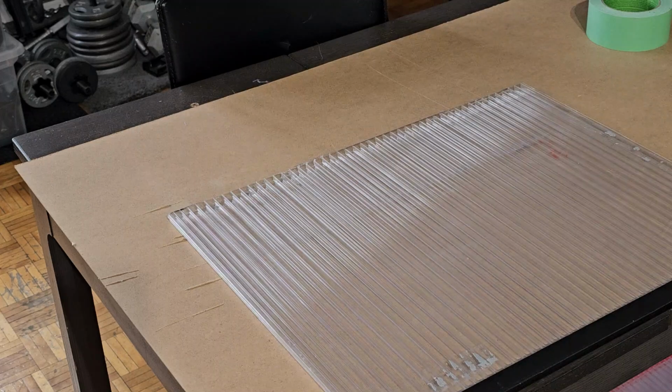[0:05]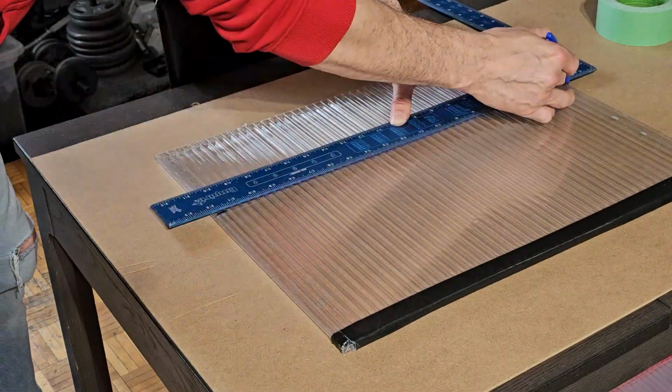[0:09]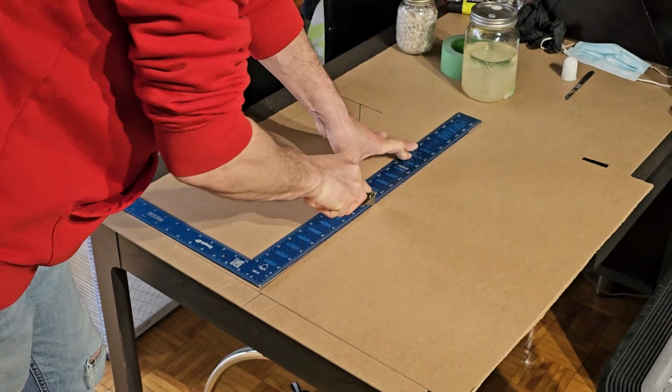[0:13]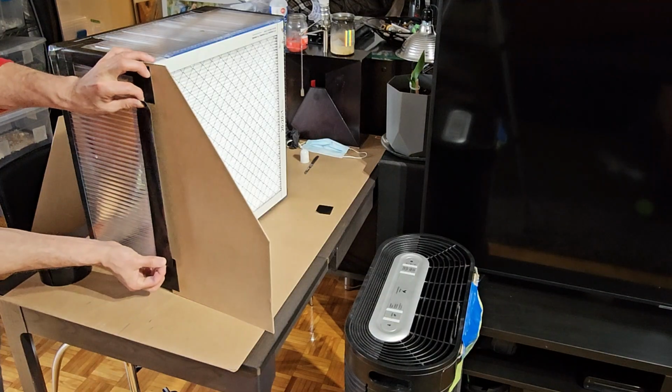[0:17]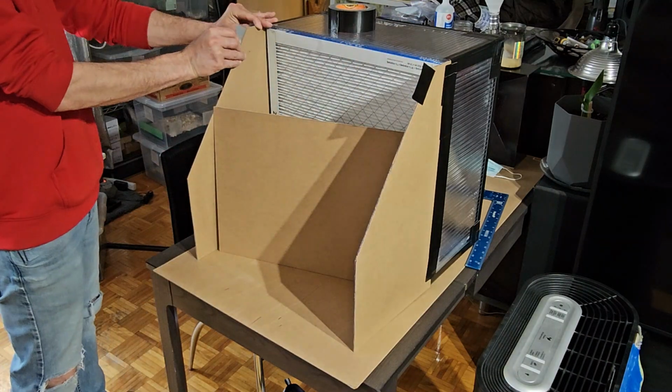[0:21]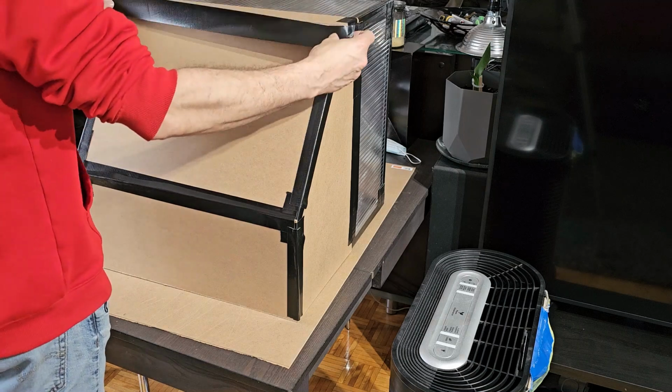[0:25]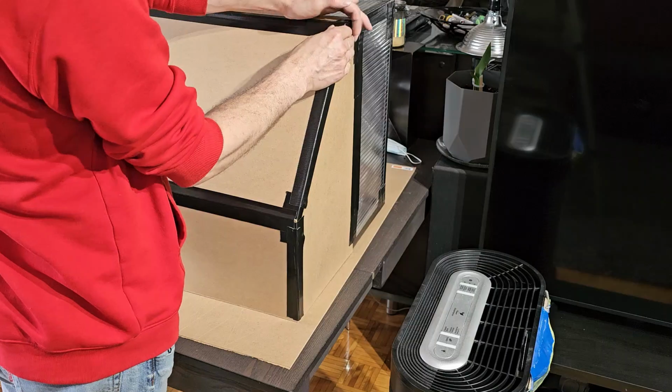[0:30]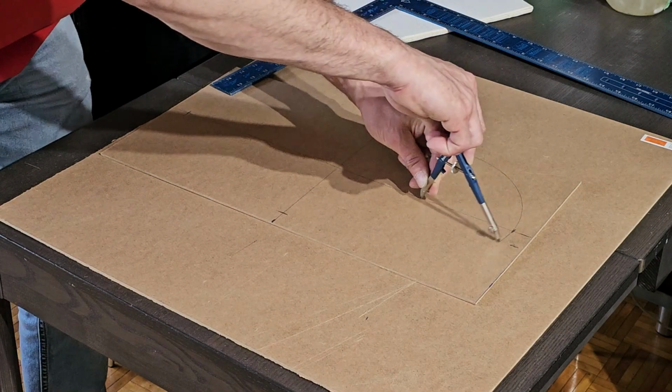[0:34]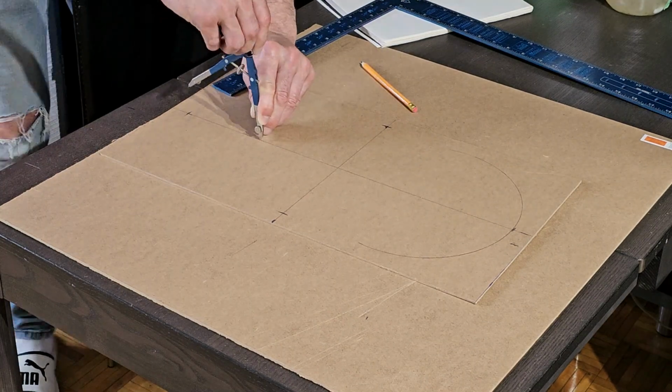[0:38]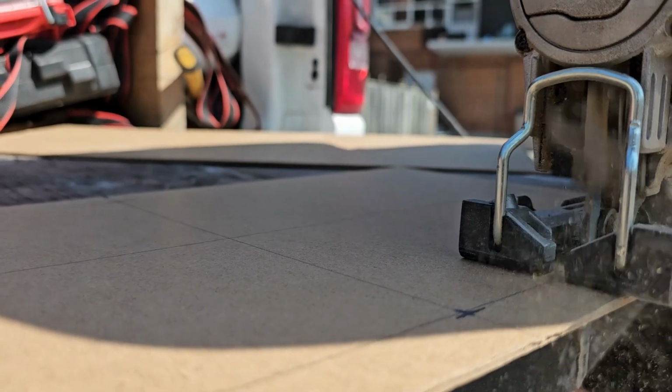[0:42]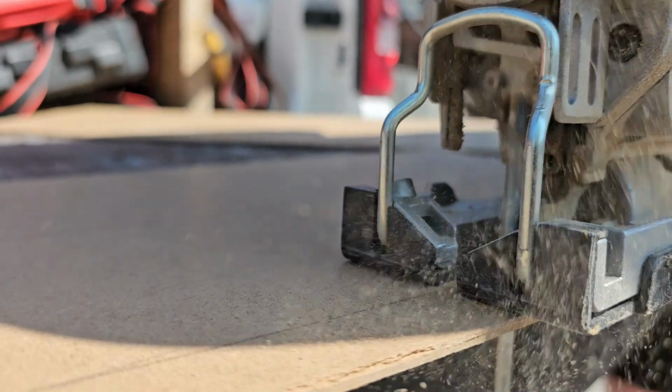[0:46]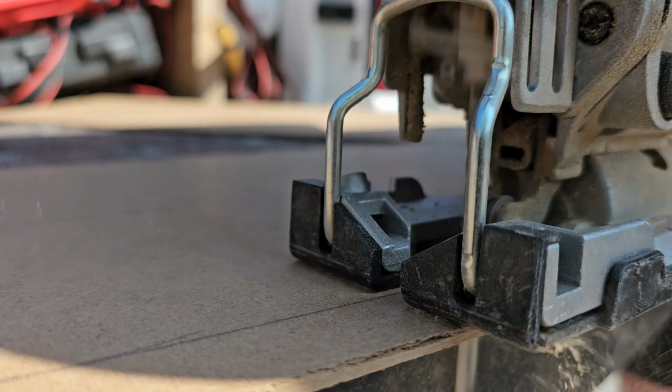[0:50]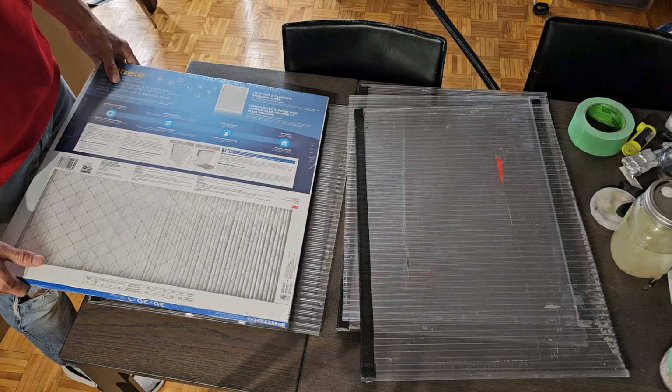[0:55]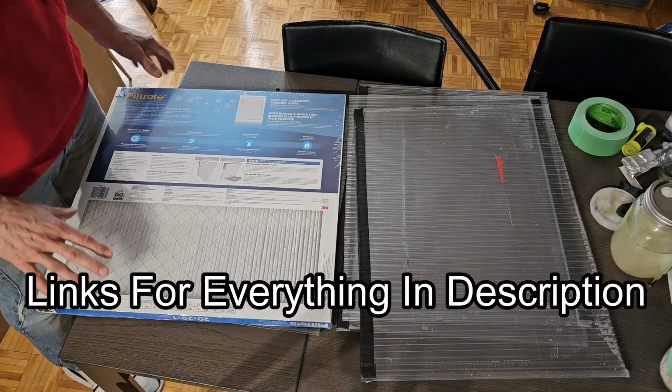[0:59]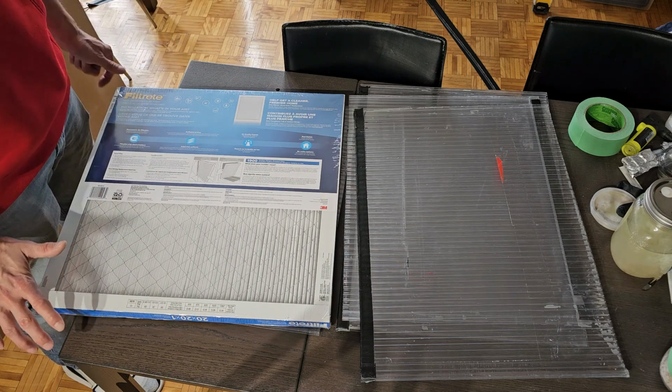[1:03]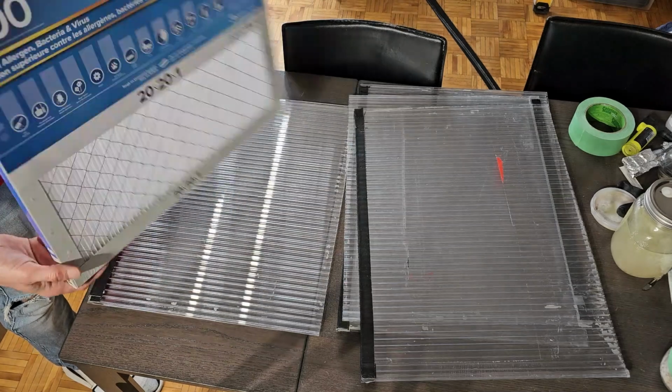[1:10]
Some of you may have seen my first video. I decided to take it all apart and build it again, actually showing you guys how I do it step by step. I'm also going to refine the design in the process, because originally I had just used the cardboard box that it came with. So I bought a new filter.
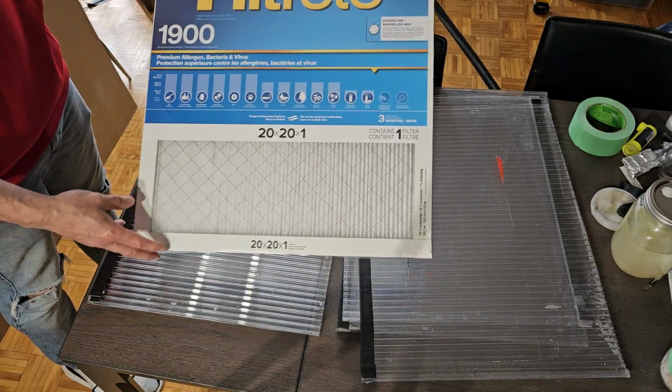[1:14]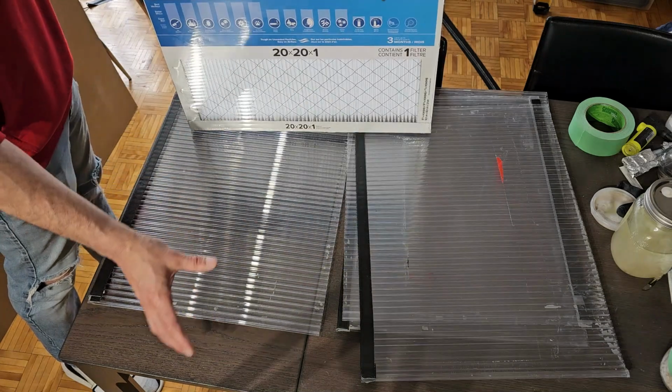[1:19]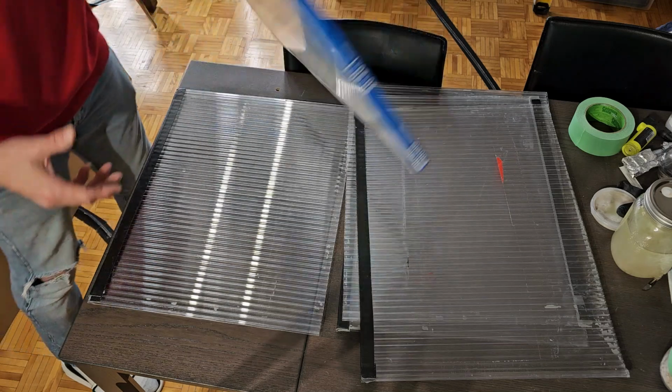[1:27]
It's a 20 by 20 by 1 inch. And this is my secondary filter. It's what's going to help me to build up pressure from my air purifier behind here to help it flow through more evenly, because the air purifier is not going to do that alone.
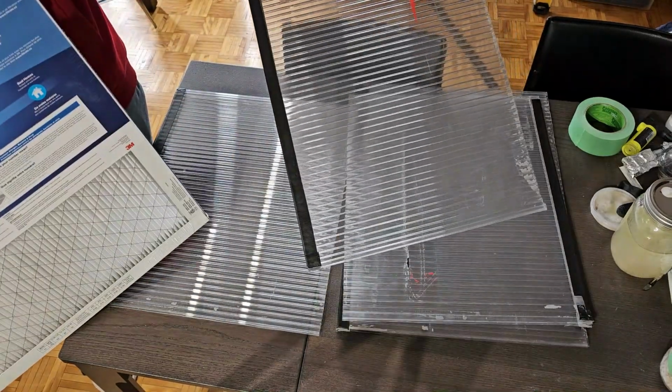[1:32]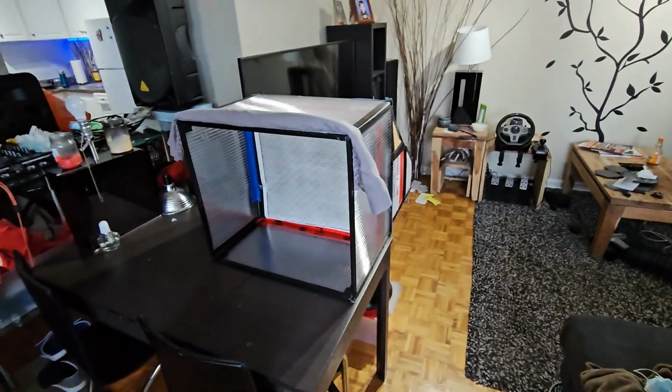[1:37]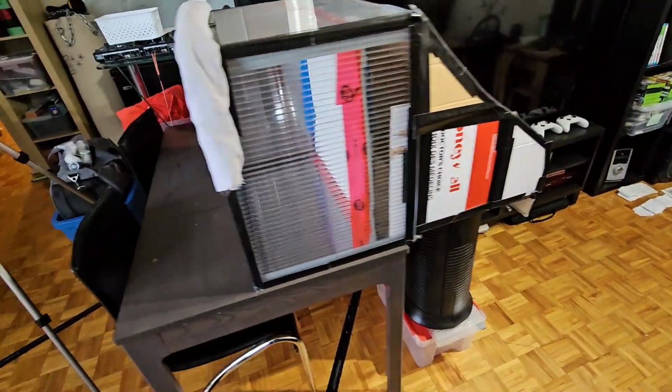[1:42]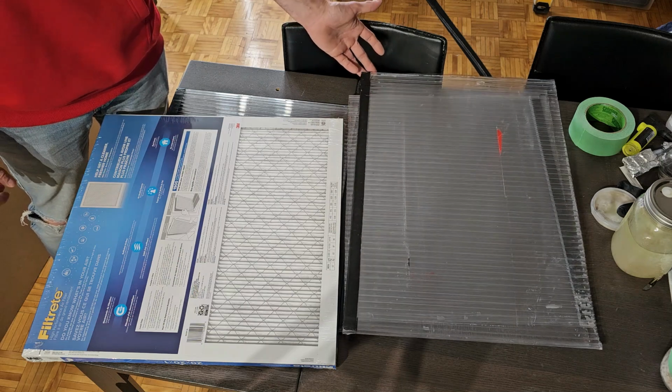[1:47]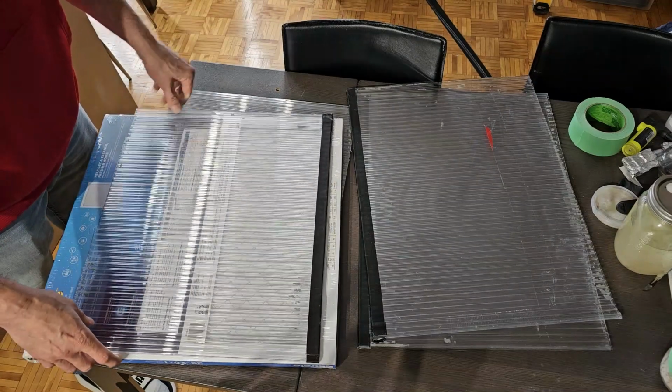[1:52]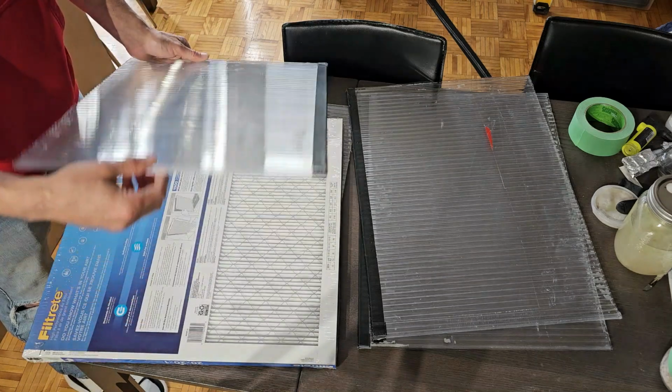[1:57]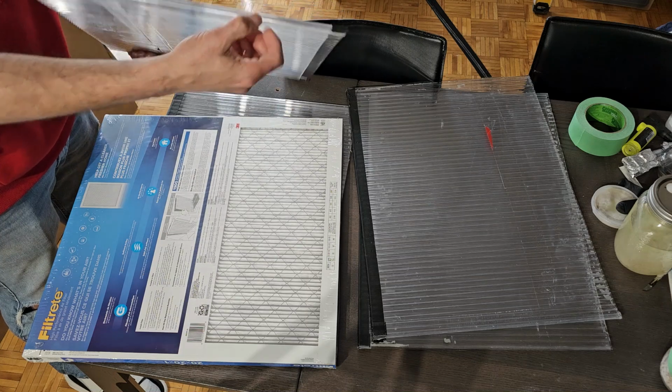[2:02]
Anyways, I've reused the corrugated plastic from the last box. So this made up the square in the front that I actually did my work in front of and inside of. Originally, I had not done it at the exact right size, so I'm going to modify that. So basically, to use this to build a box around it, I would need two pieces that are the same size, and then the other two pieces need to be a half inch longer, because this is a quarter of an inch thick. So both sides is a half an inch.
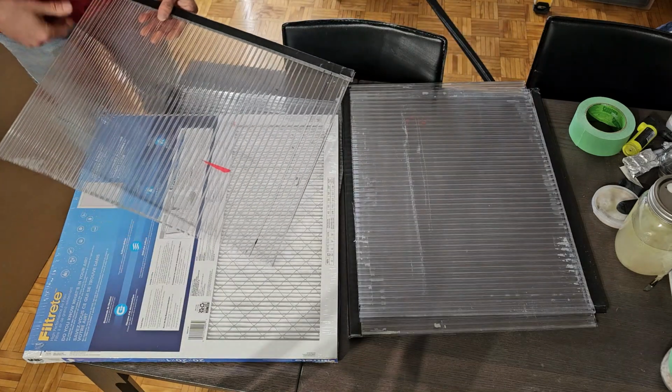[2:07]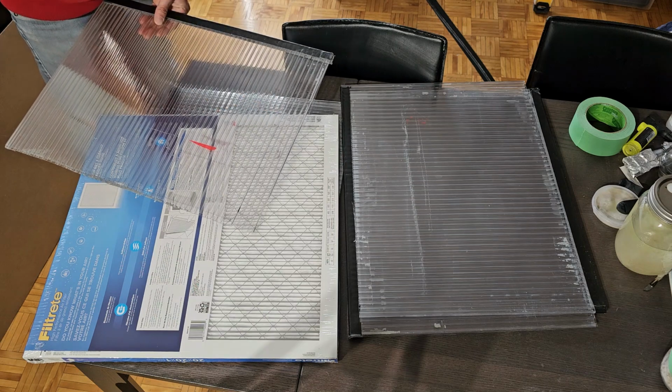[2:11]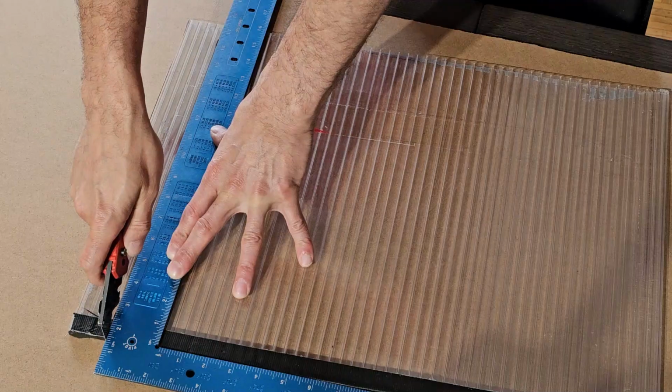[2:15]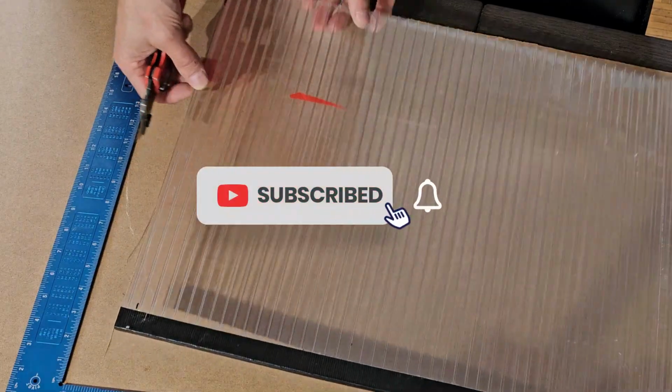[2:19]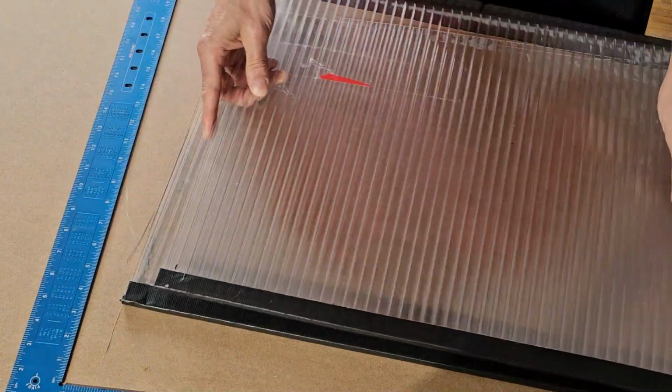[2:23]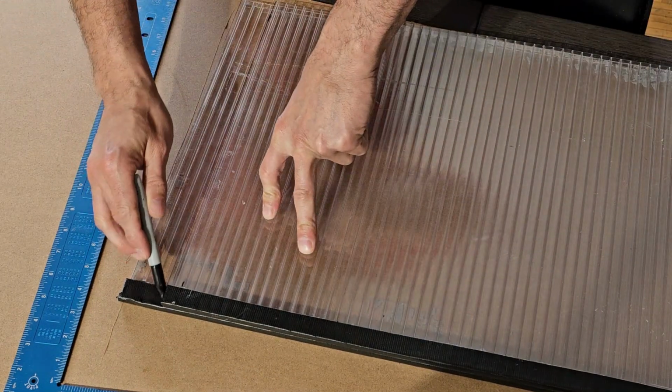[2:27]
So I've marked out on this one already where I'm going to do my cut. So I'm going to do this here and on the other long one. I will say the cut edges of this plastic are very sharp. Now I'm just going to use this one to mark out on the next one where I'm going to cut.
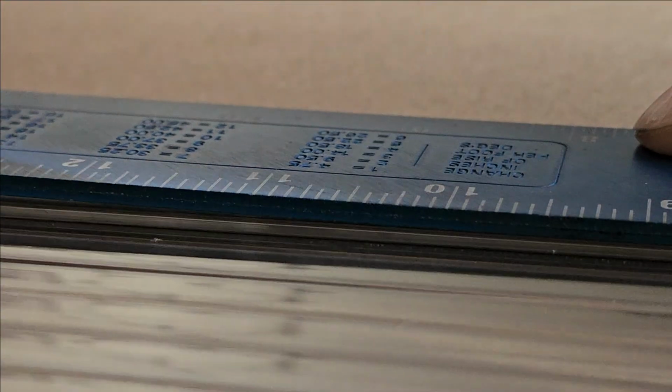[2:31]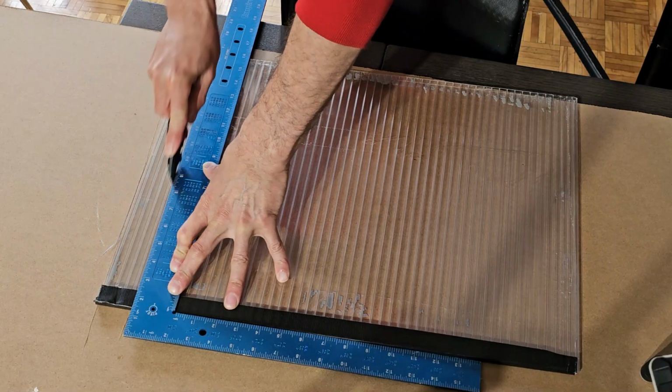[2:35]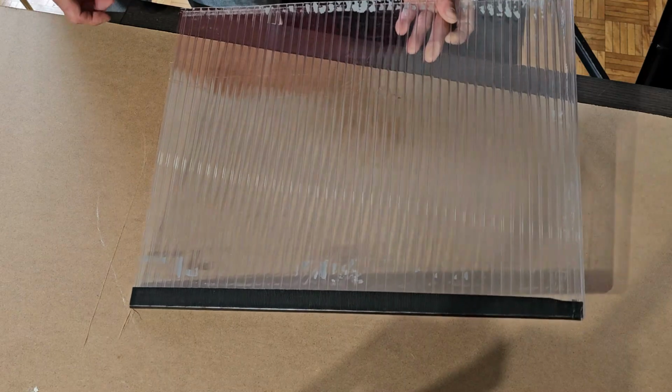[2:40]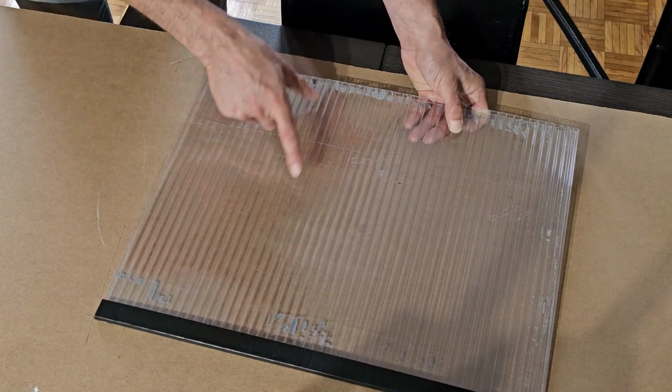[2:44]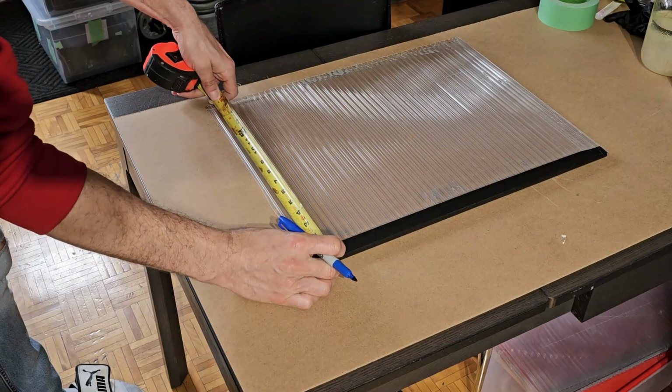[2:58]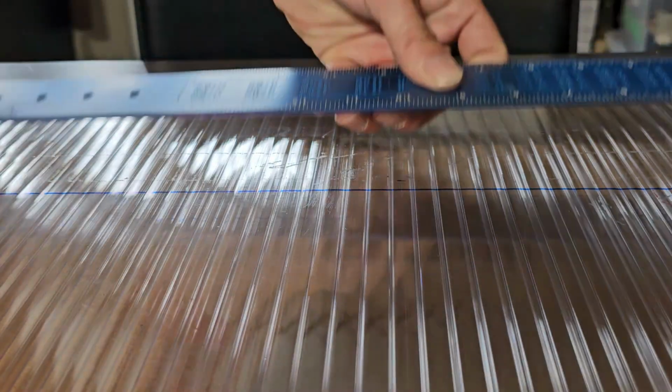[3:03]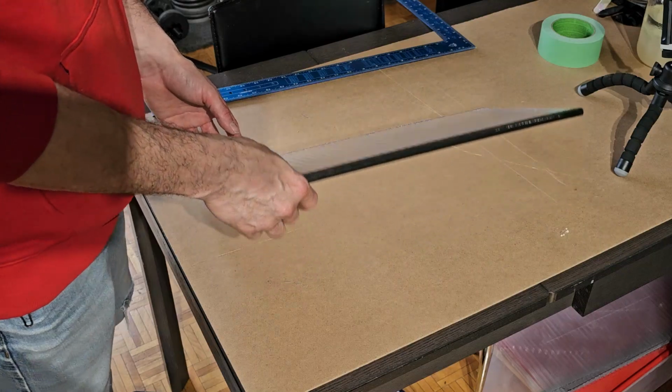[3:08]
Okay, so our next step is to reduce the depth. My last hood fan, I had this much depth in the box in front of it, as well as being able to work in front of this. And it took up too much room. The reality is I only need about half as much. So I'm going to take all four of these and cut them all down. I'm just going to mark 10. Now we're just going to do that three more times for the other sides.
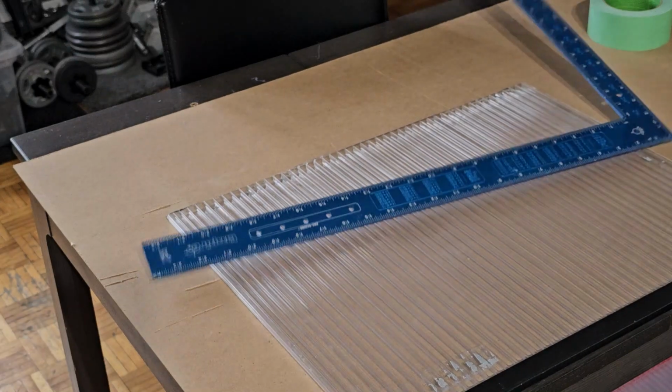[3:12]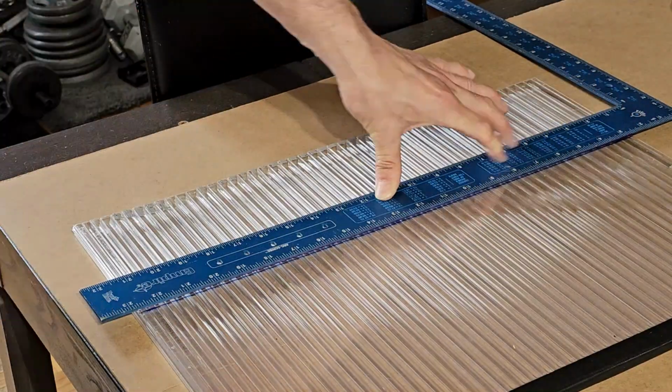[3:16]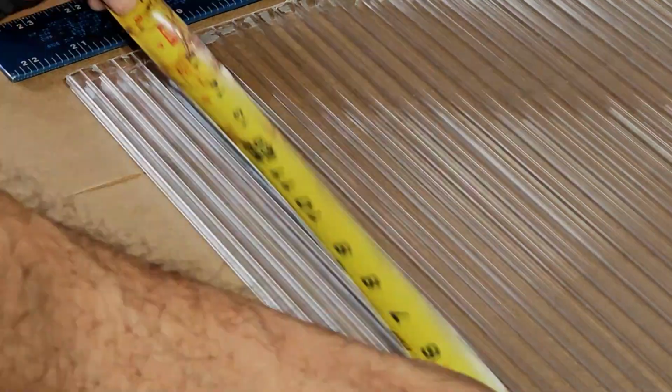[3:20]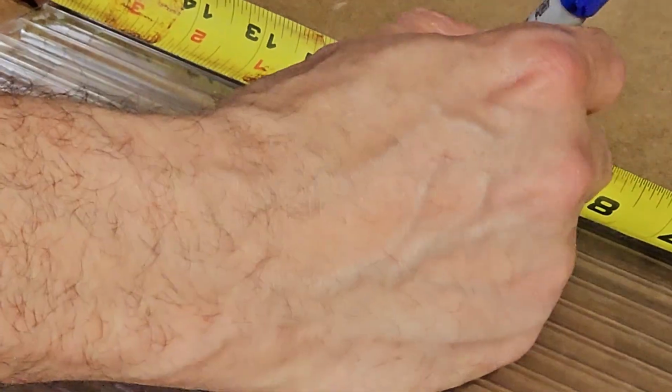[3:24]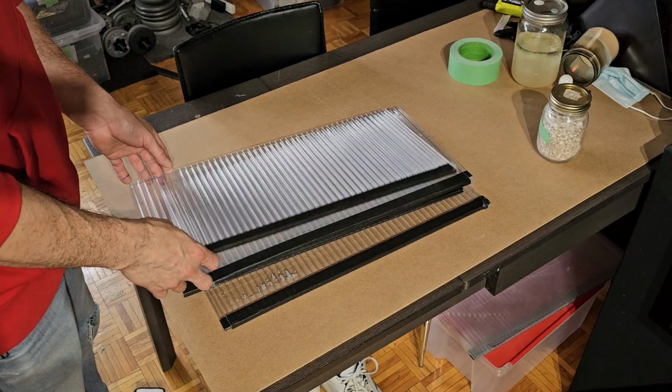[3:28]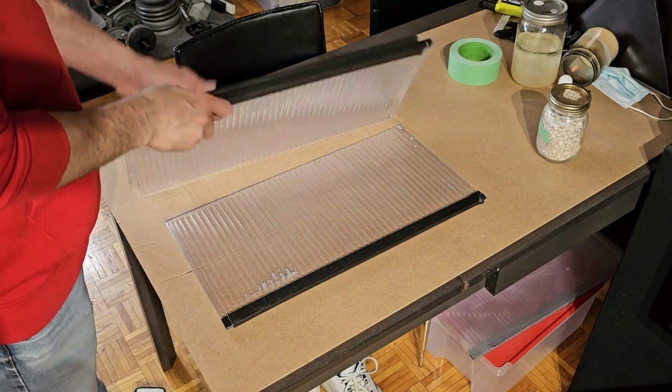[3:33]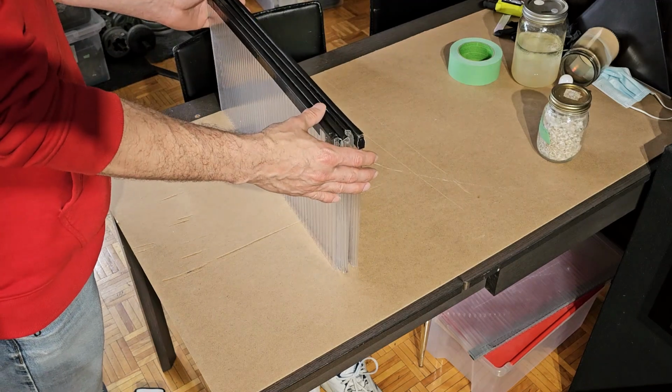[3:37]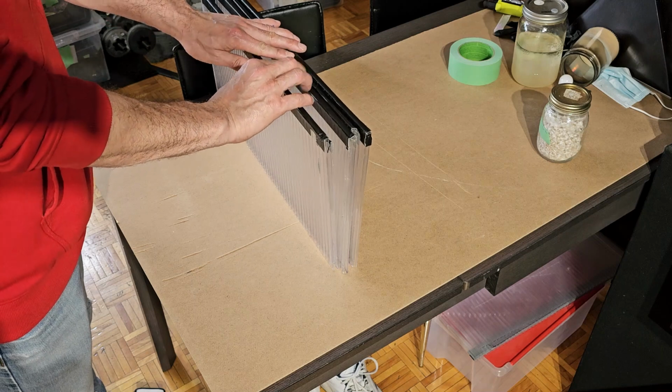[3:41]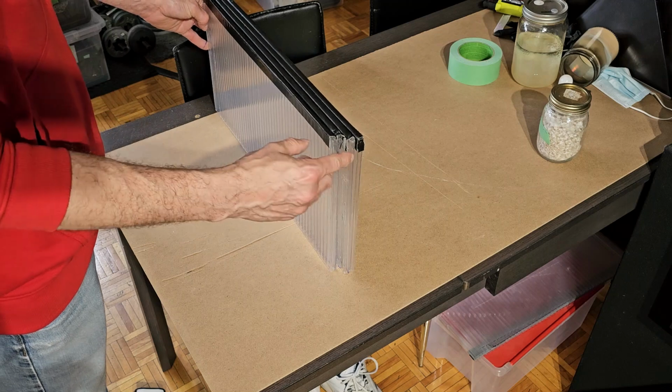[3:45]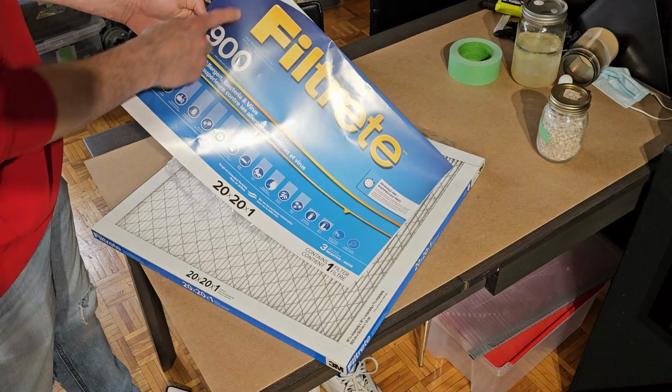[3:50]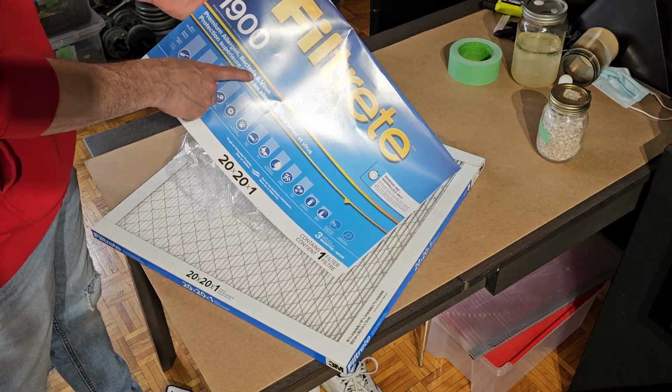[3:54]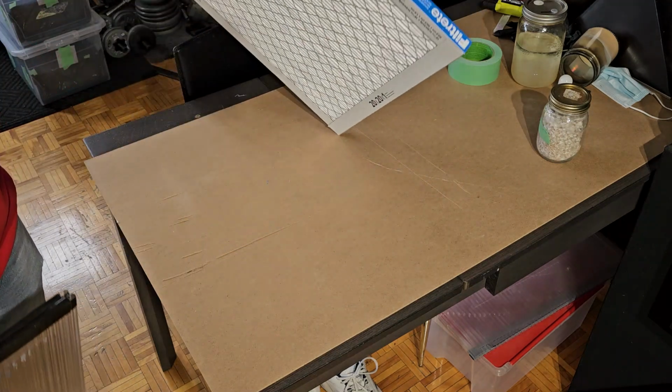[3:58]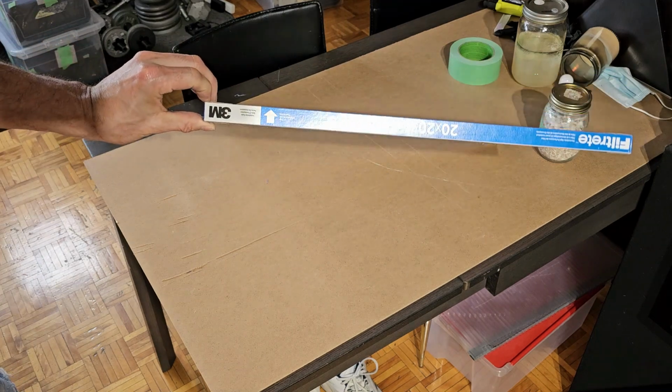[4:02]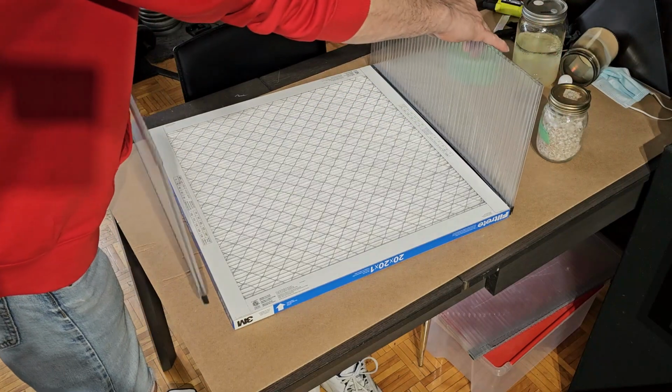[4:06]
These filters are directional, so you want to look on it for the arrows. And as you can see here, it's showing the direction. So the two shorts are going to go on opposite sides.
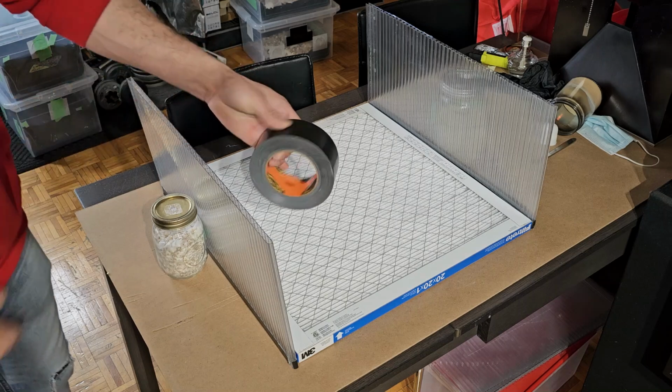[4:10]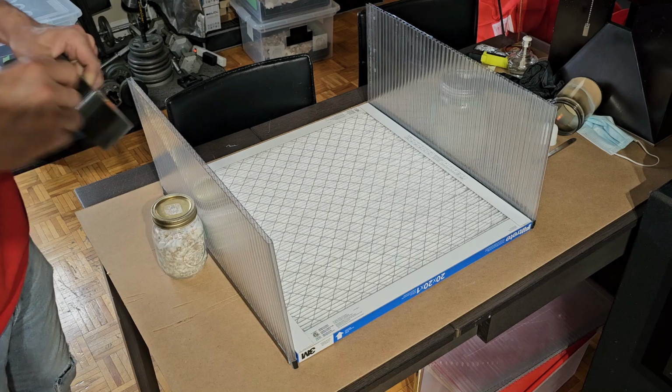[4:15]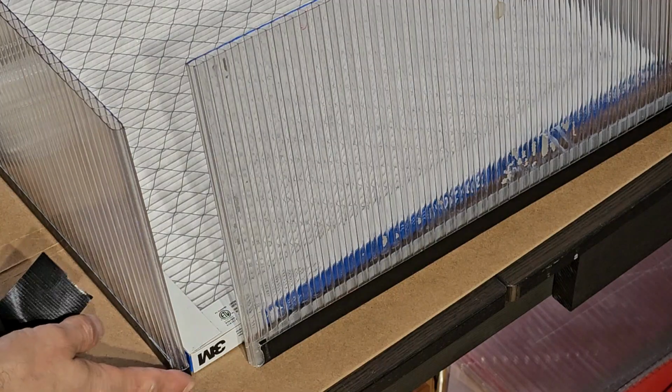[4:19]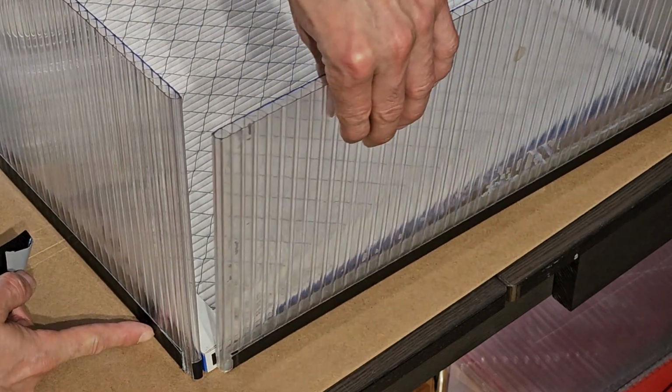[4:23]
All right, so I'm just using some black Gorilla tape. I'm just going to get a couple pieces ready. This is obviously going to be easiest if you have somebody to help you. All right, so this is my short one. It's as long as the filter, which means I want to have this one overlapping this one, like that.
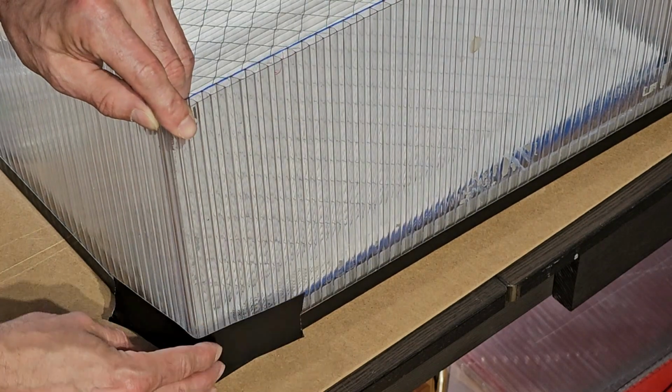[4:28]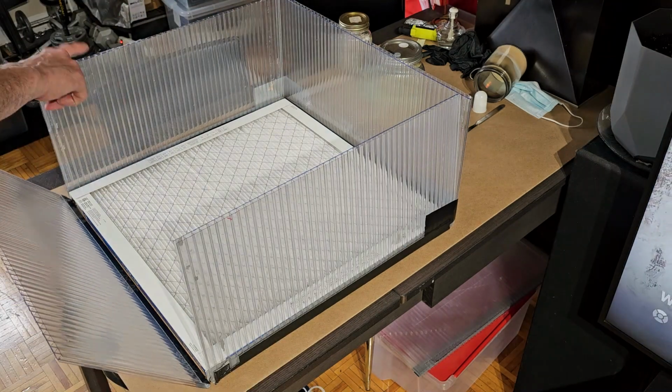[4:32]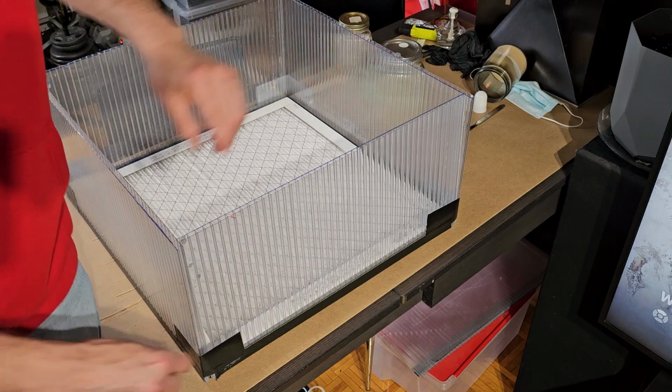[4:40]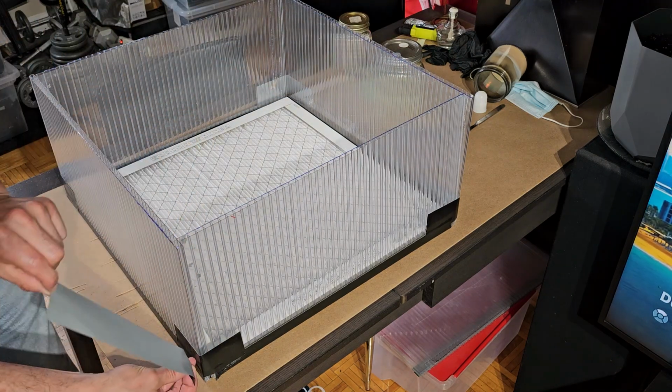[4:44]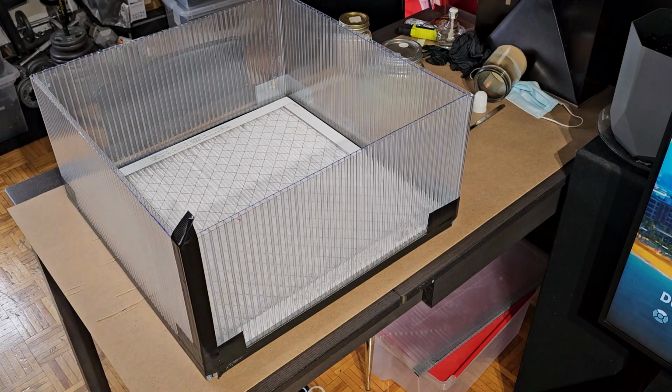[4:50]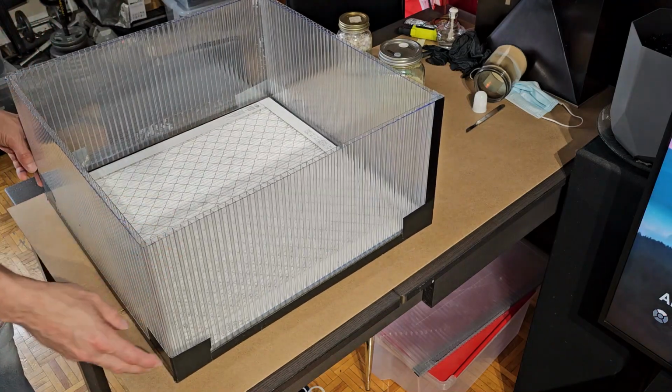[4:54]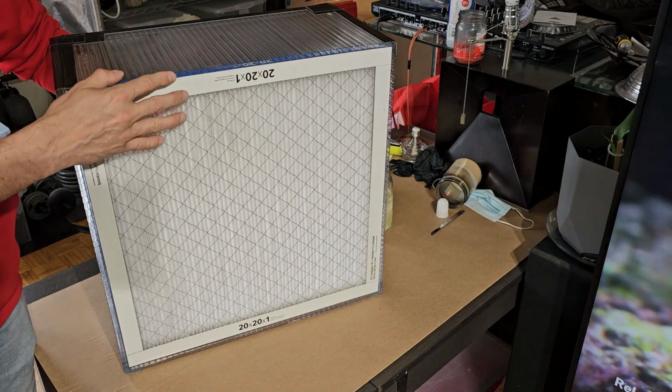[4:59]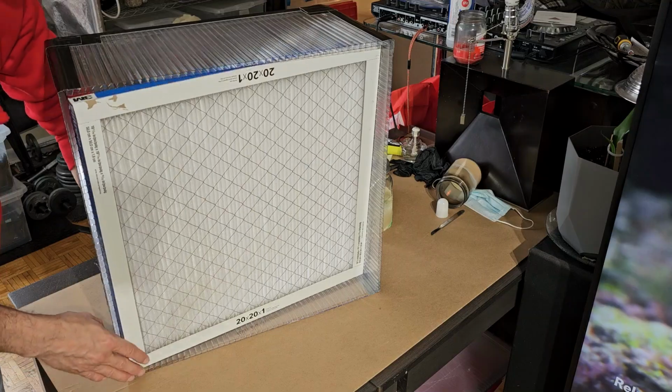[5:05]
And now that it's all held up, it'll be much easier to use some longer pieces. And I'm just going to seam the whole corner, put half the tape on one piece. And I'm just going to do that to all four corners. Now, as you can see, we've got the filter. It can just be taken in and out if you need to change it.
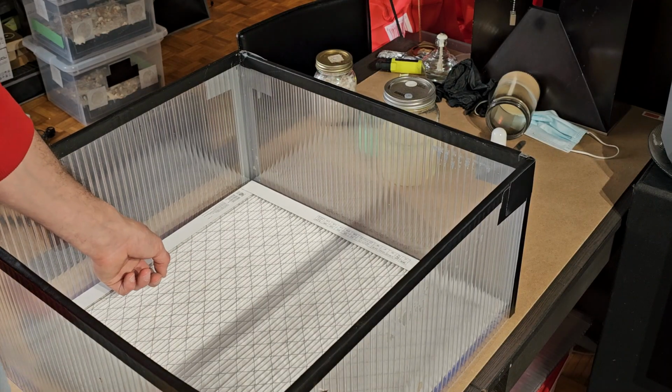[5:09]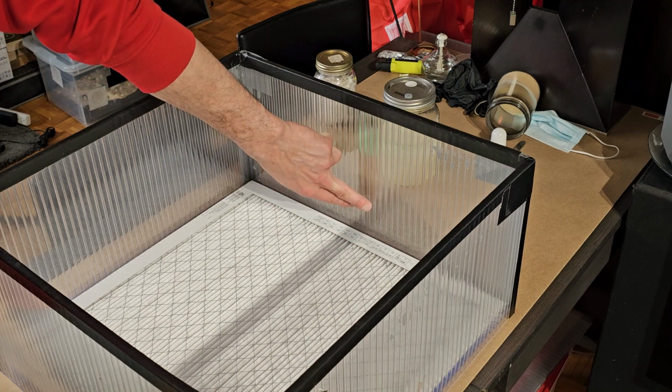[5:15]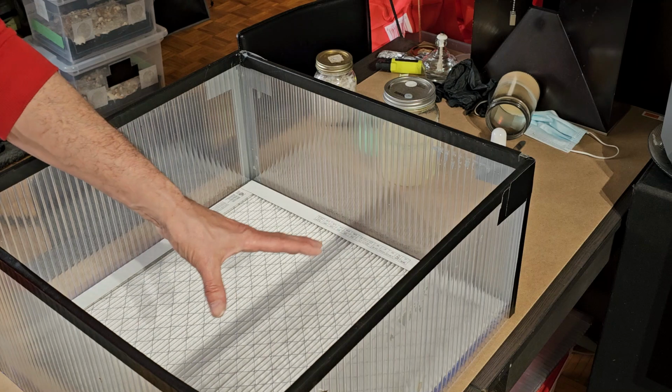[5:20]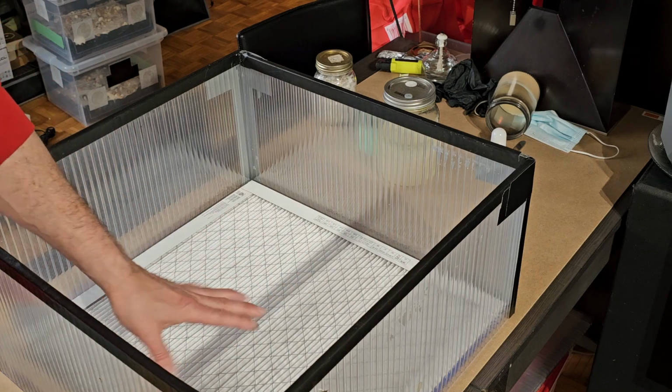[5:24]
Now, if there is a gap here on the side, obviously, as you can see, I will go around and tape all the way around all four sides of the filter to the plastic corrugation, and that way it's sealed up all the way around, and the only way something's getting through is directly through the filter. And then if I need to change the filter, I just cut the tape, change the filter, and add some new tape again.
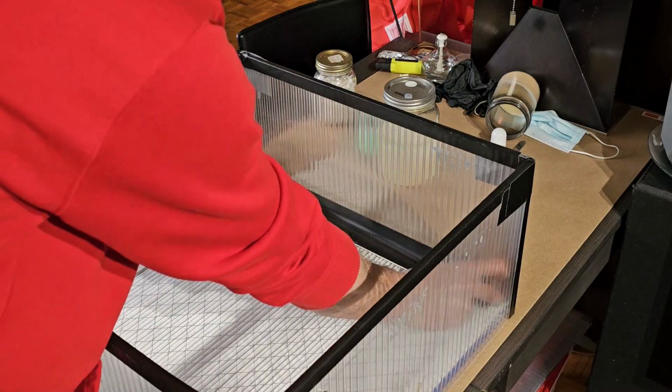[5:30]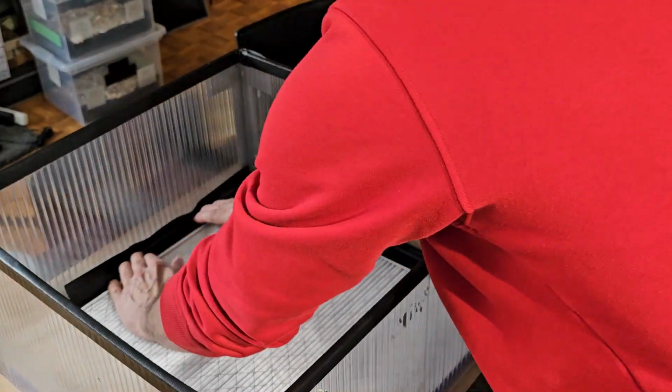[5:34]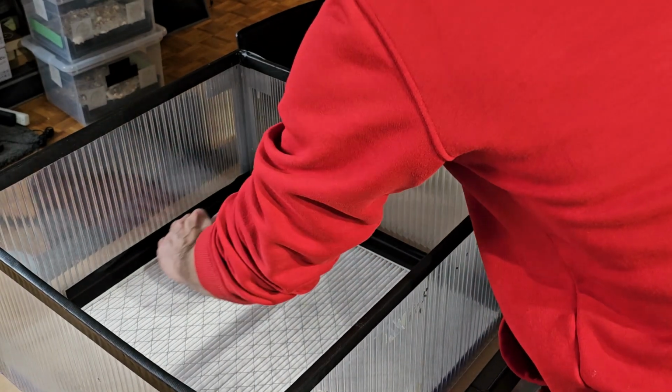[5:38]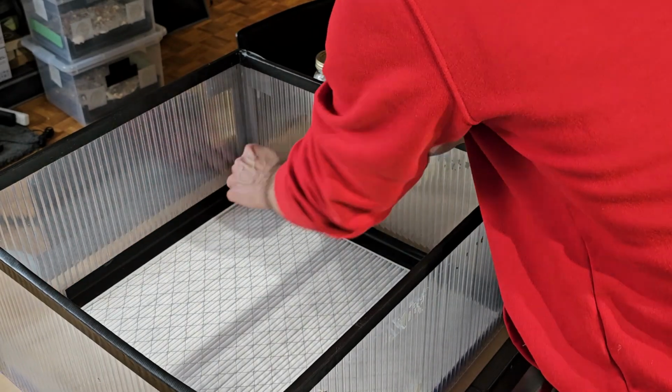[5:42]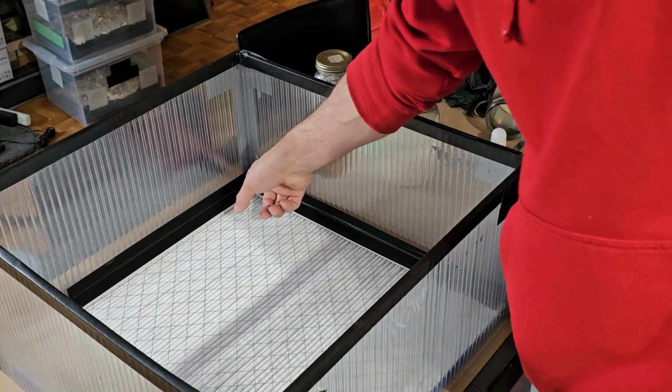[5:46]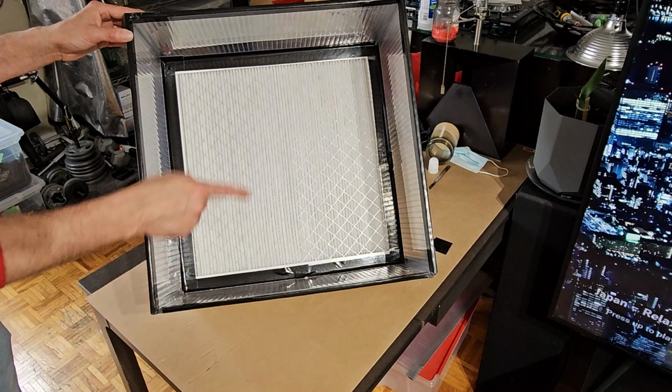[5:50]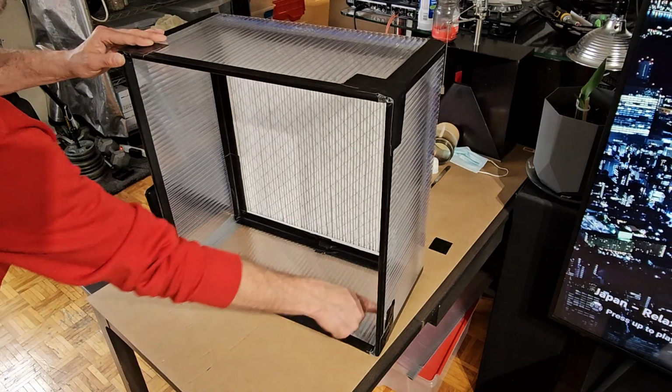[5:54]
Notice how I tuck it in here on the edge. Try to get it tucked into the corner before I stick it to the sidewall. That way it goes right in nicely and easy to clean. I'm going to fill this little hole in too. Alright, so we're all taped up inside around all those corners. Now I'm just going to seam these corners.
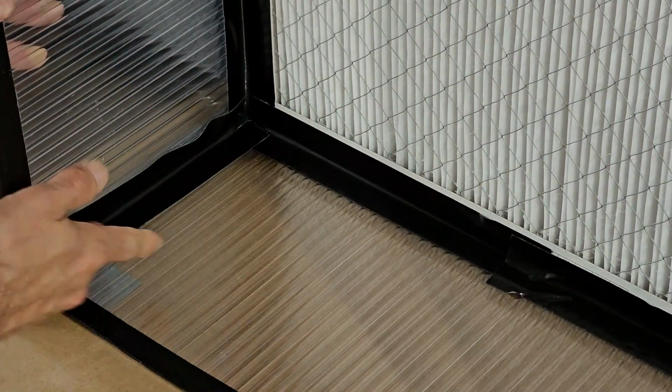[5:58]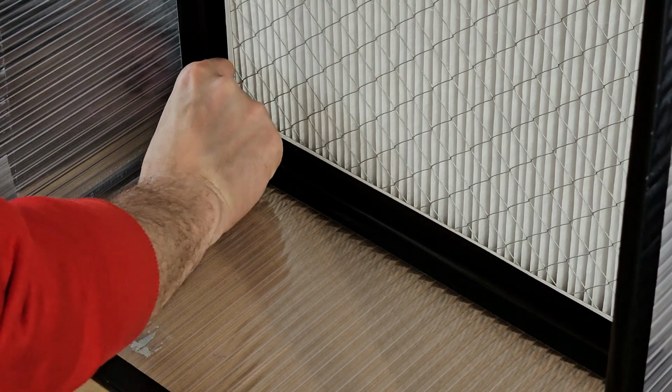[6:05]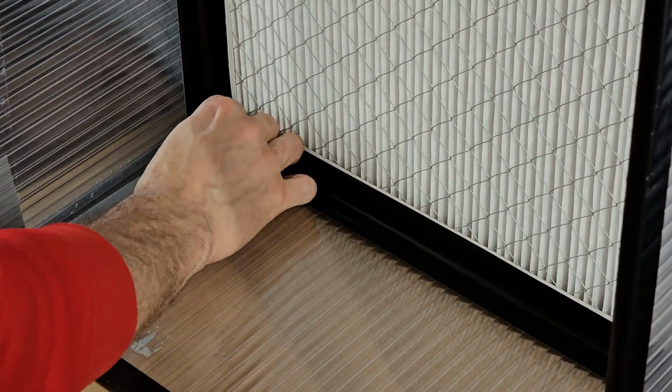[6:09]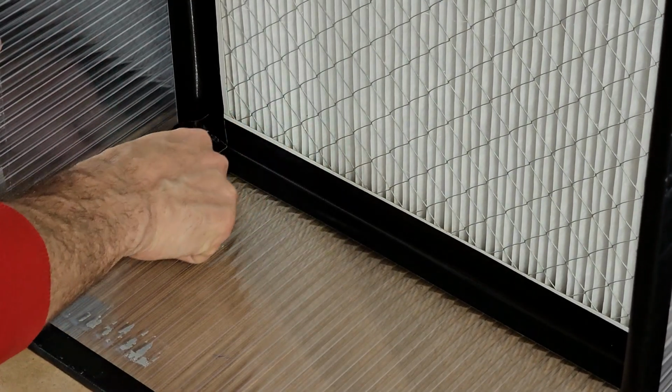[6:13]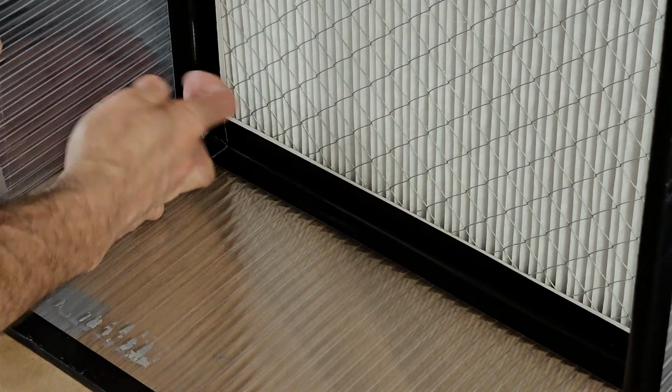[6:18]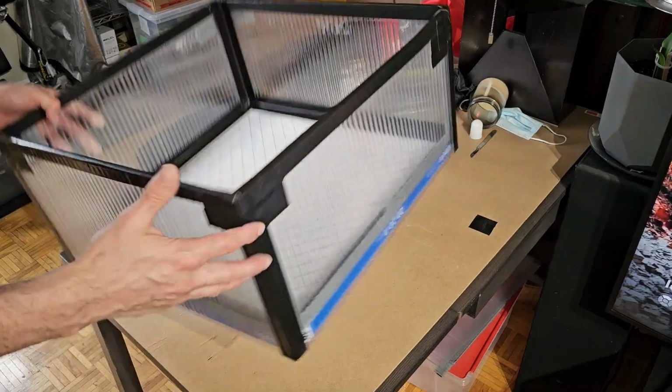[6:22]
Sometimes it helps to fold the tape in half like this, and then you get the bottom half stuck where you want it, and stick the bottom down. Drag your fingertip through it to get the corner stuck right in there, and then smooth out the rest of it. All right, guys, so there you go.
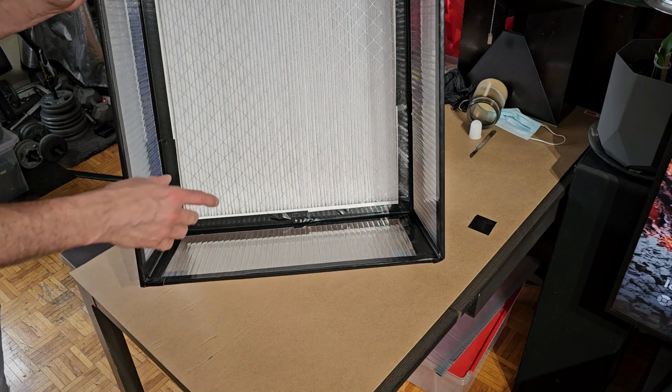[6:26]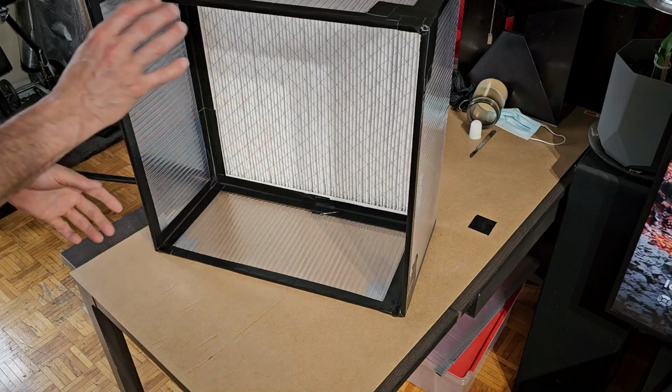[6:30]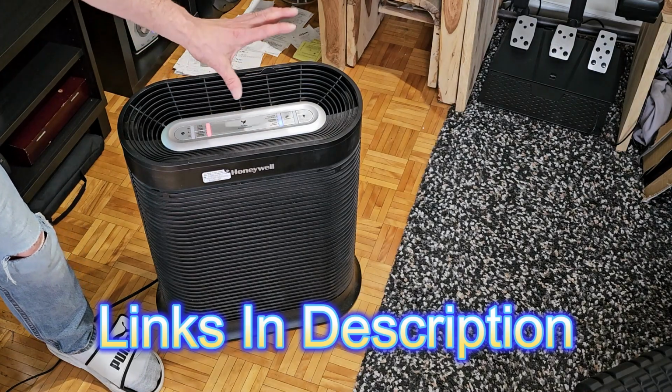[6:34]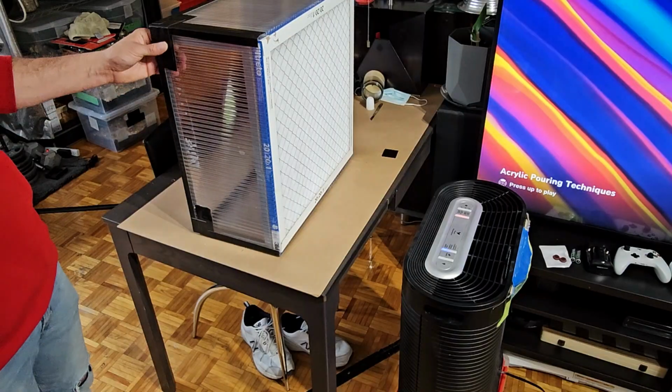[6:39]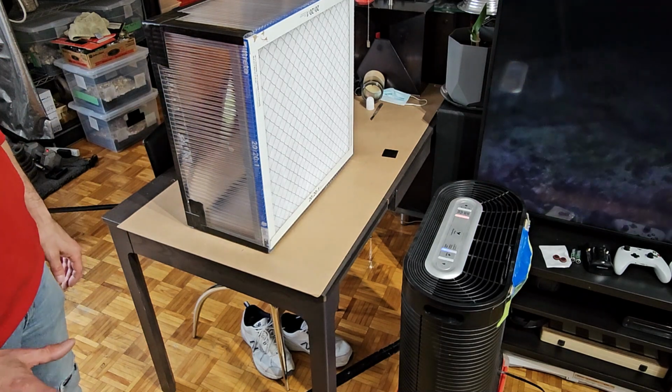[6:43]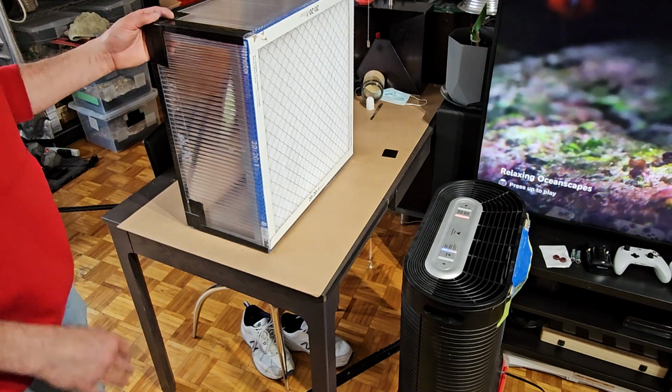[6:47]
First part is done. We got our box. This is where we'll do our work inside and in front of here. Now I just need to adapt my air purifier to blow air up and be collected to shove it through the other filter. Now, I'm kind of making this up as I go, so bear with me. I will leave measurements and all the details in the description, so check there.
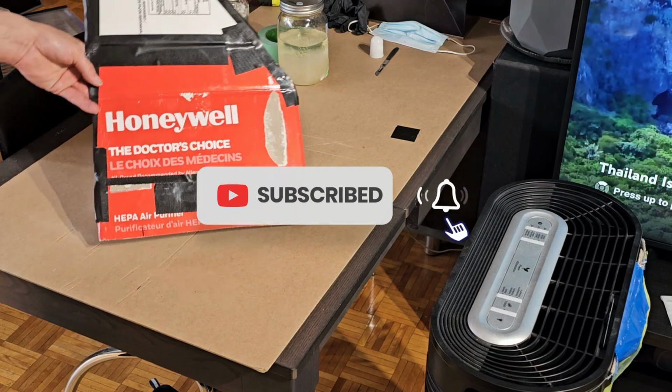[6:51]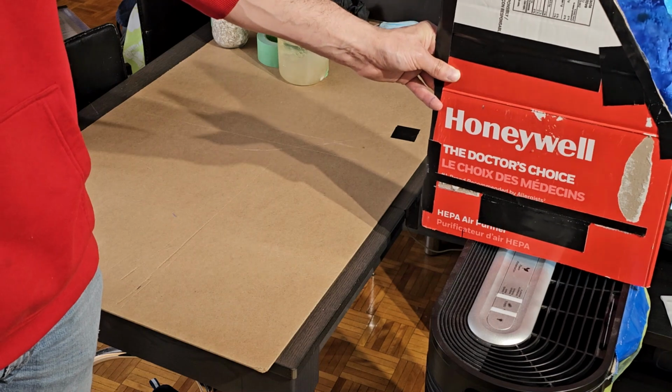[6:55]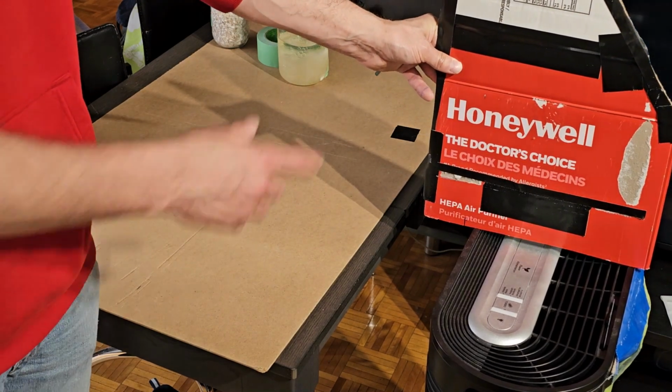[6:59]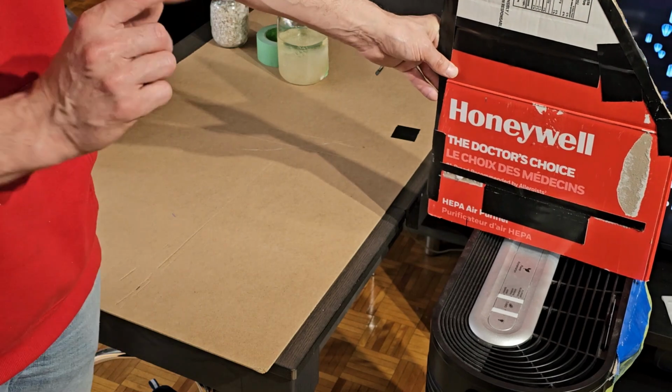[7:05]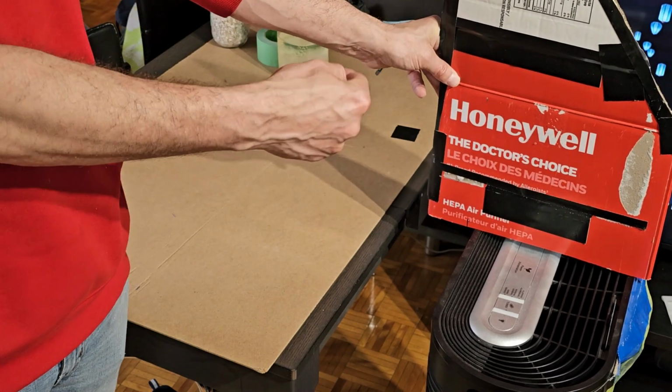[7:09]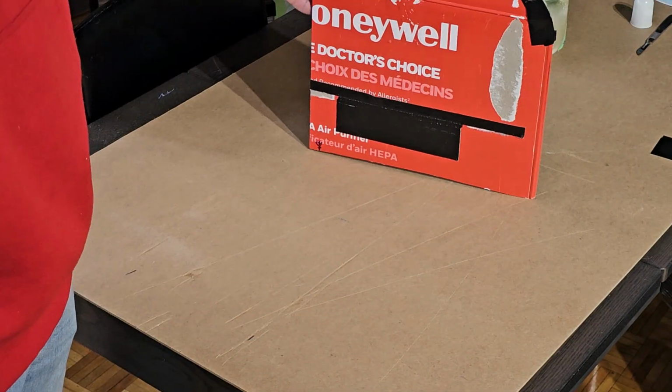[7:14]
All right, so here's the side piece from the old one, and it used to kind of just sit about here, but it's much larger than it actually needs to be. So I'm gonna trim this down a little bit, and then I'm gonna use this as a template to trace out on a piece of hardboard that I'm going to use for the new part that's gonna scoop the air into the filter.
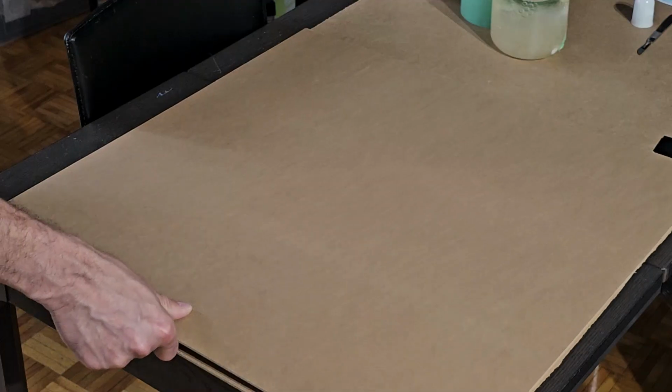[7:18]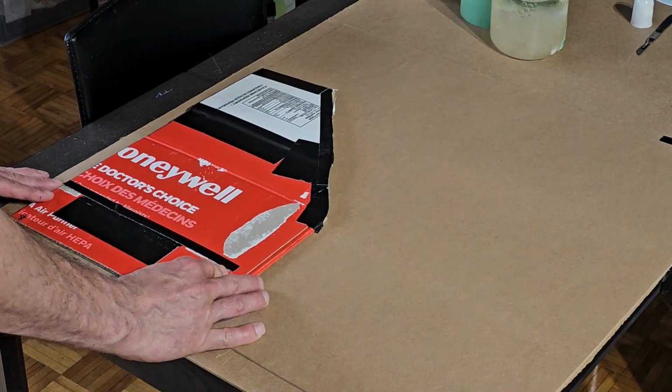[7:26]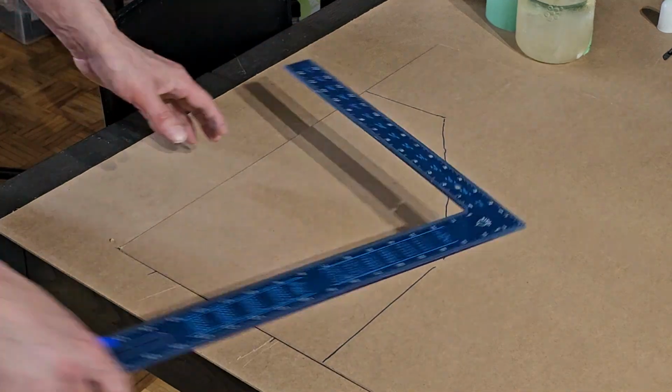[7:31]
All right, so I've got my new template for my sides. Now I need a front and a back piece and a top. I've got a clean piece of hardboard here that I'm gonna use. I have cut it, but I know that this is a square corner, so I'm gonna use it to start off here. I'm just going to straighten out these lines a little bit.
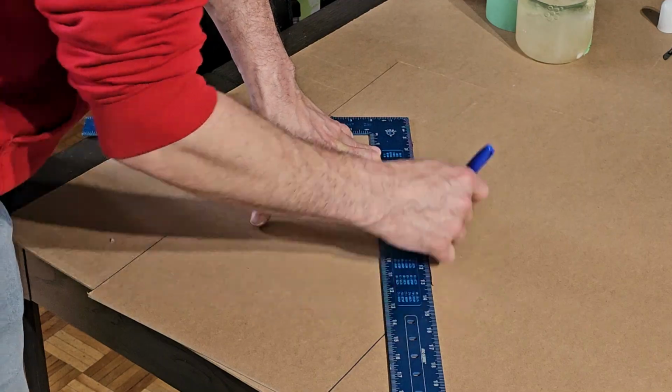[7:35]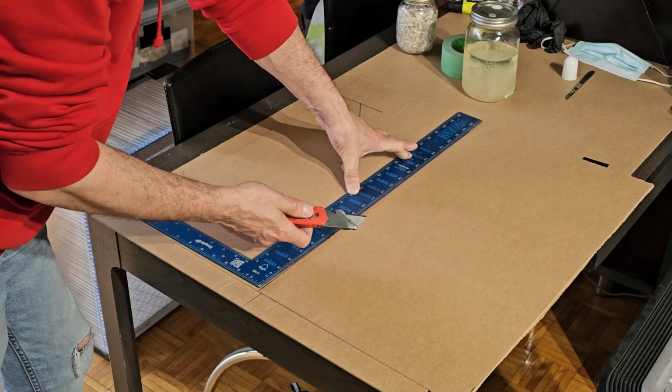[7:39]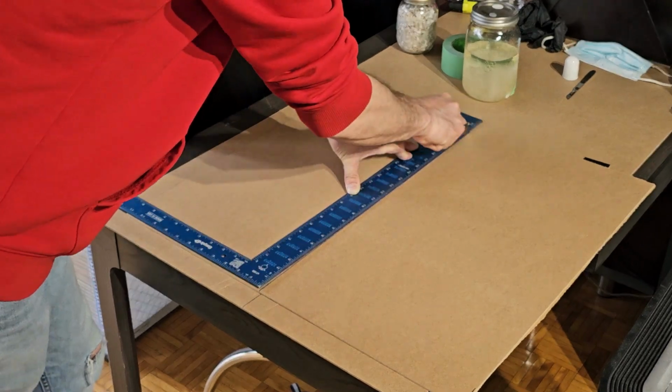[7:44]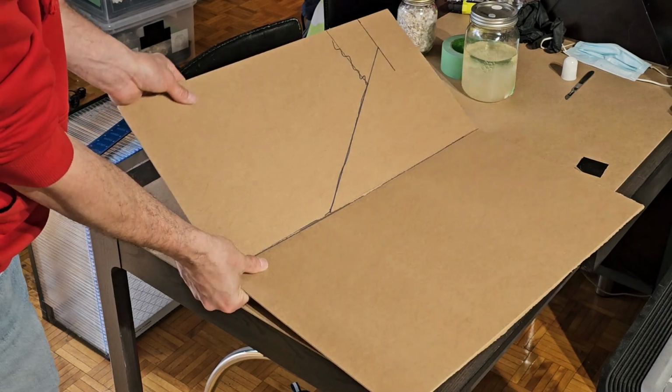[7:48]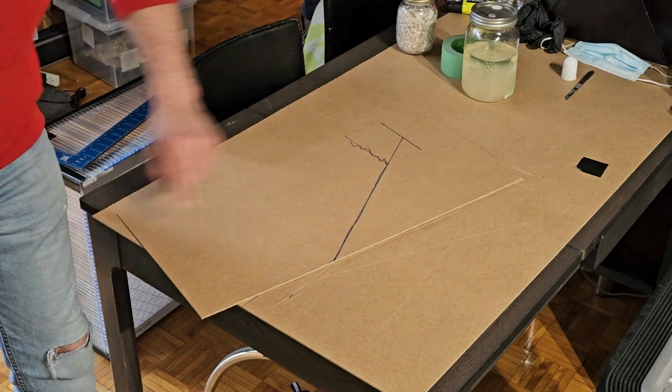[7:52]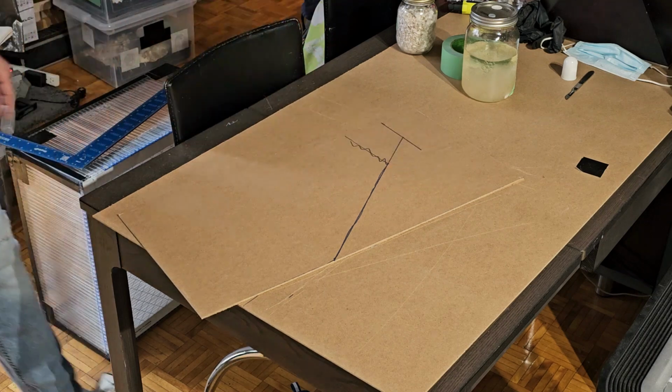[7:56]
Make sure you use a new sharp blade. I'm just going to score it a couple times. And we should be able to just snap it. Now that we've made our first cut, it's going to be much easier to do our second cut. Now whether you do this one first or this one first, it doesn't matter.
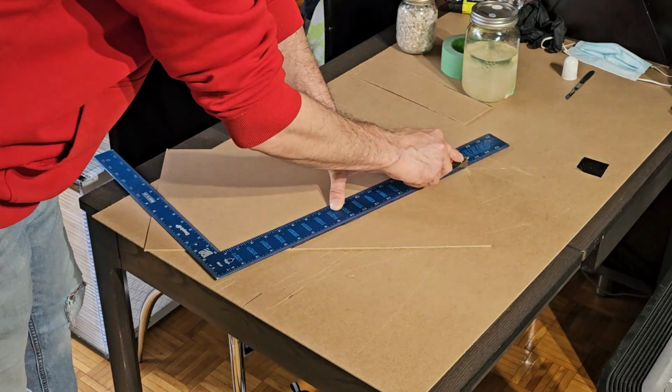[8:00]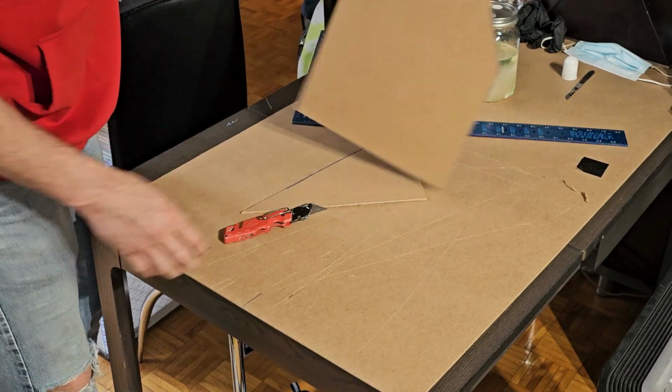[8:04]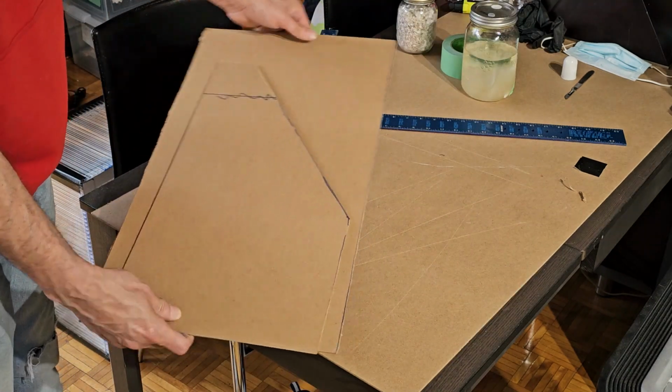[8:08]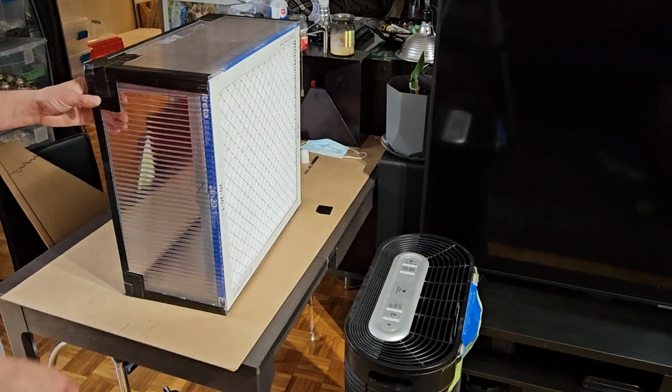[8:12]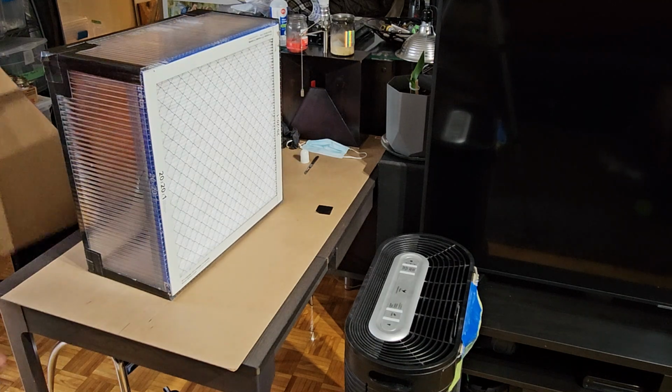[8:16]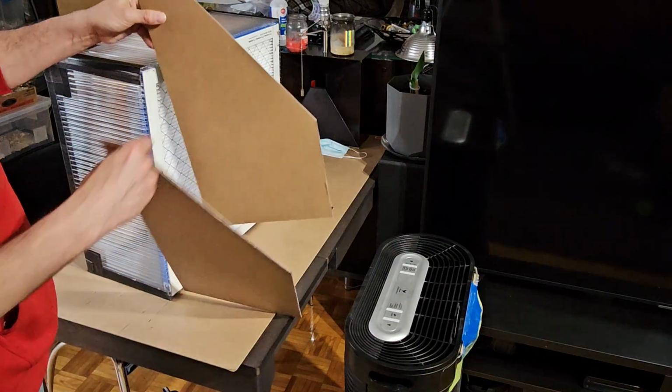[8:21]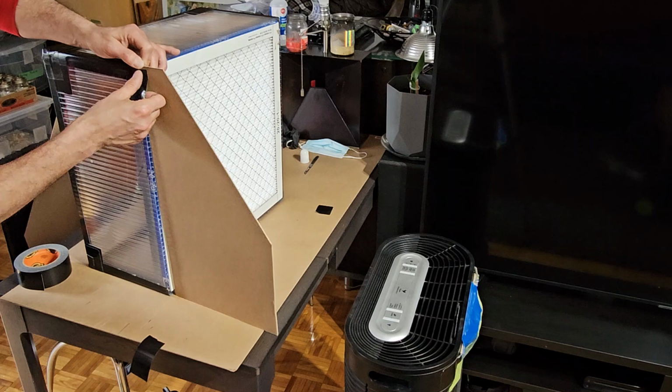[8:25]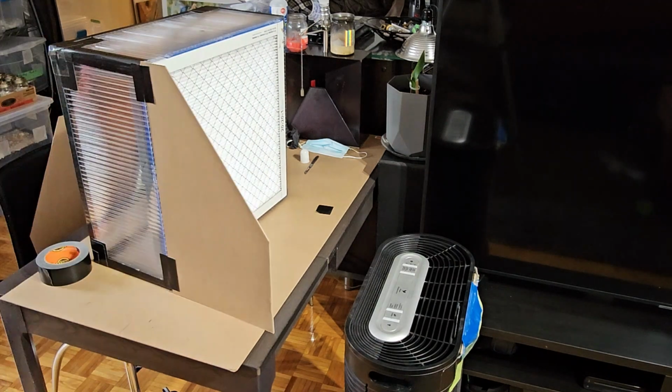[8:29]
Sides. I'm going to trace this onto my scrap piece and make one more of these, and then we'll move on to the next step. Alright, so we've got our box prepared. We've got our sides prepared. The next step would be to attach these onto here. Fill in the rest. Now we're going to do the same thing on the other side.
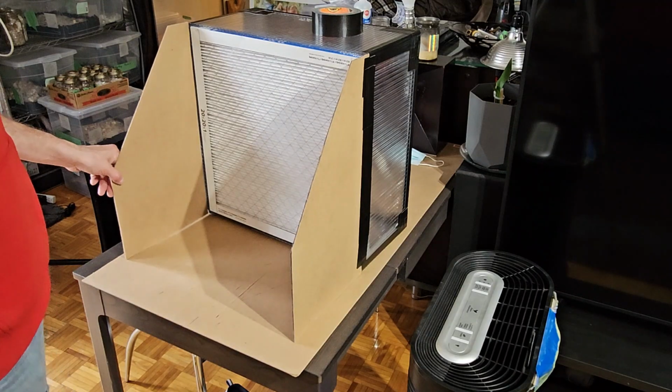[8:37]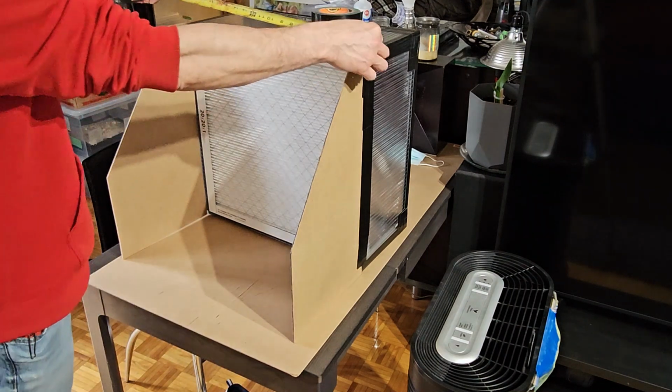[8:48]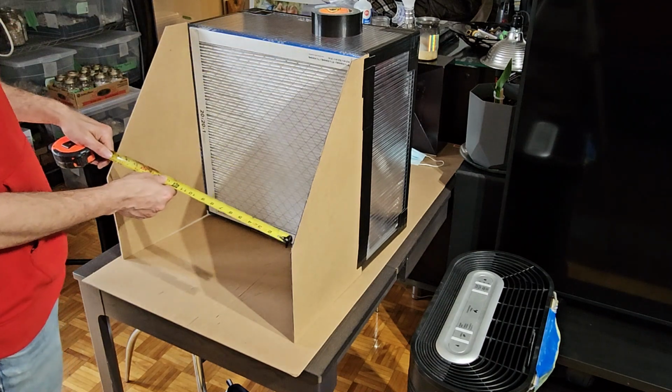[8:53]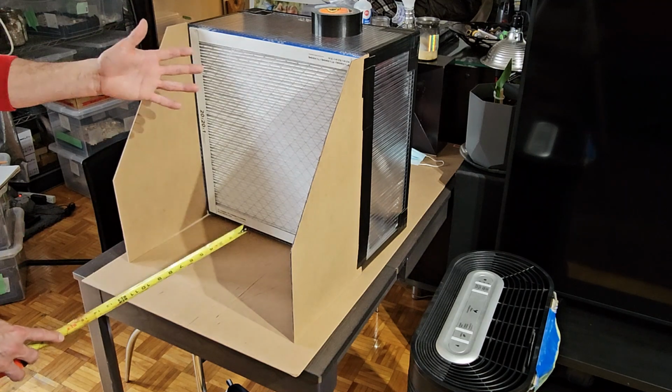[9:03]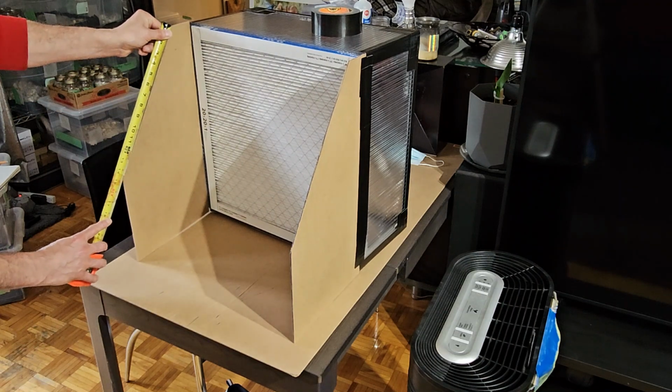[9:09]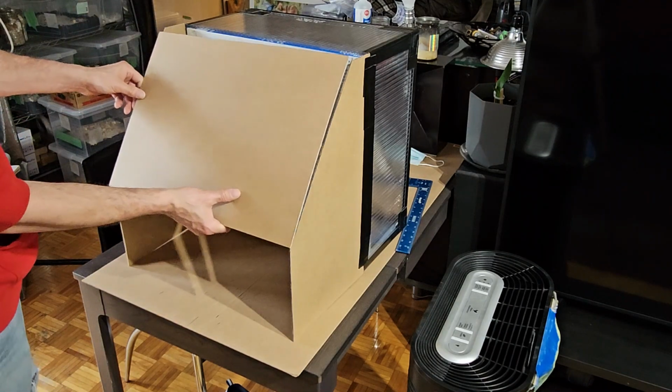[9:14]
Alright, for my next trick, I'm going to fill in these pieces, and then I'll figure exactly how to mount the bottom one thereafter. Alright, so the width, 20.5. It's going to be the same thing down here. Now we want to measure the length from the point to the point. Again, I'm going to provide cut sheets so you know exactly how big to cut. Whether you get this material or another material, I'll give you all the measurements so you can build it the same way. So your angle here is 14.5. So 14.5 by 20.5. Our new piece is going to go like so.
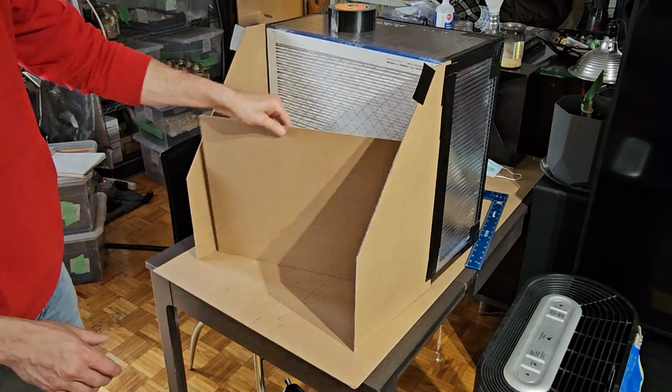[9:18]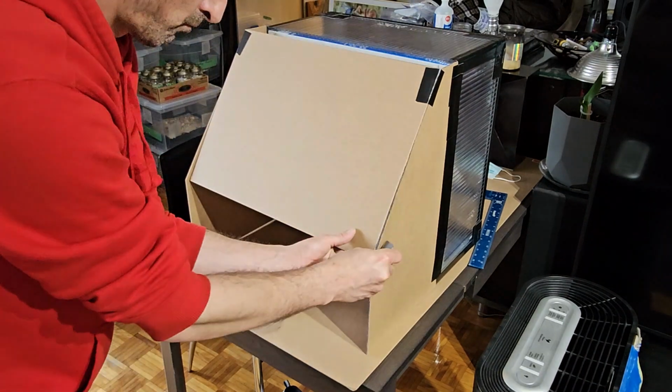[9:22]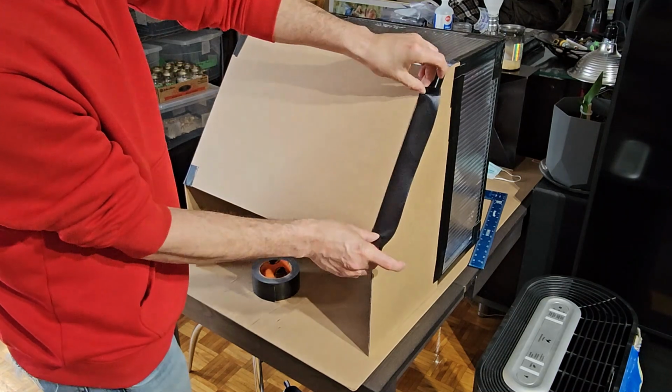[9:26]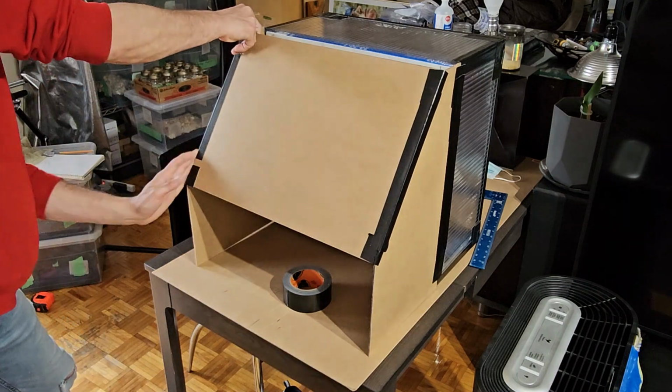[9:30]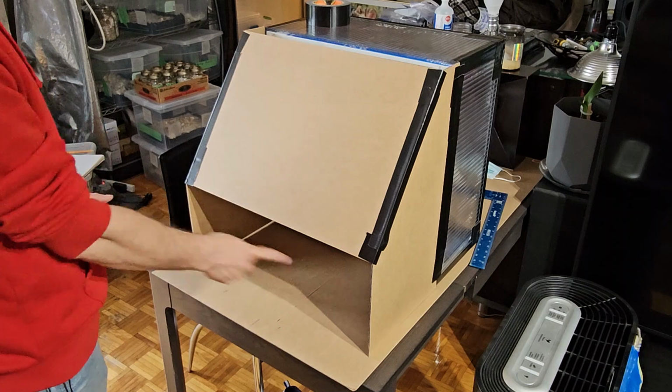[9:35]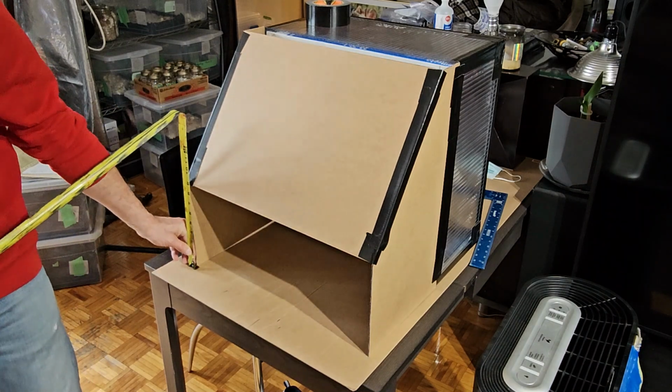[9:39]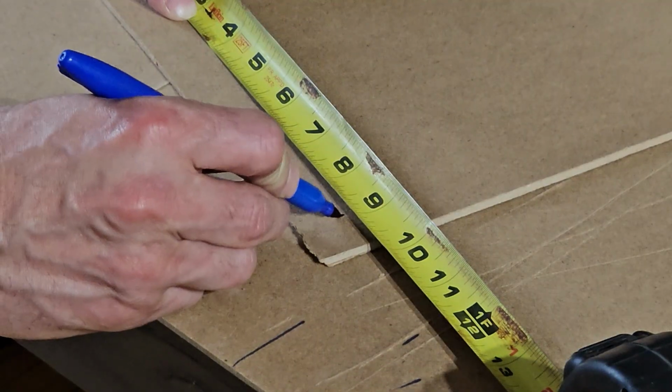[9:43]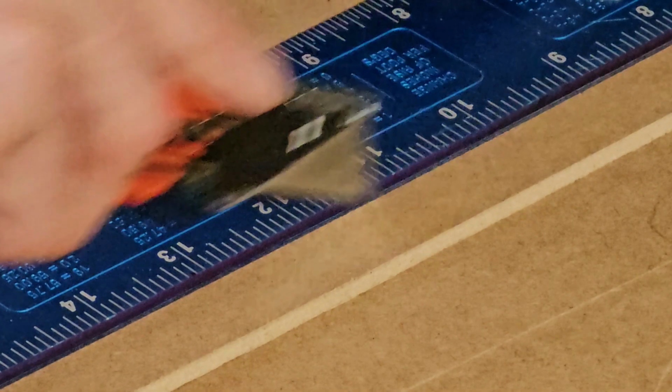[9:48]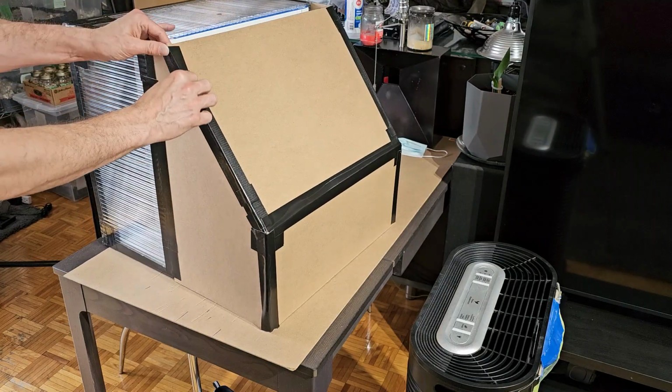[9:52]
This piece next. We already know it's 20.5. And our height is 8.75. Alright guys, so as I'm taping up the rest of this, I got one more piece to cut for the top and then the bottom.
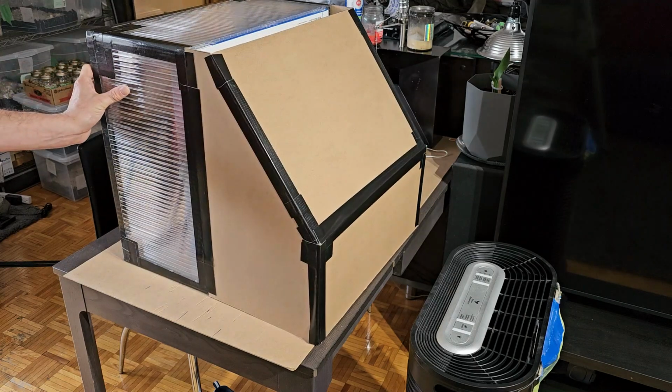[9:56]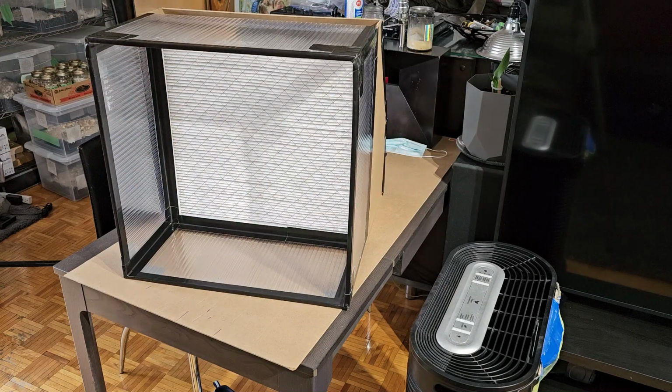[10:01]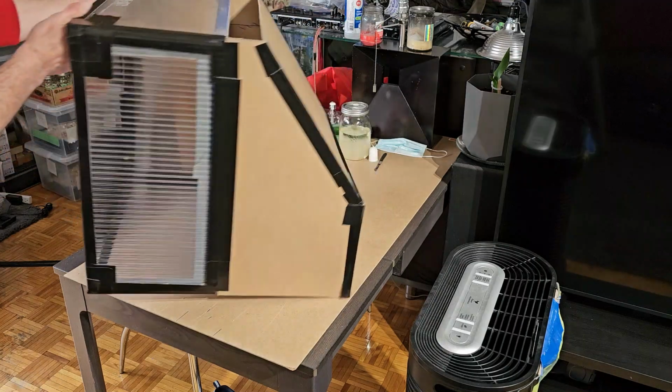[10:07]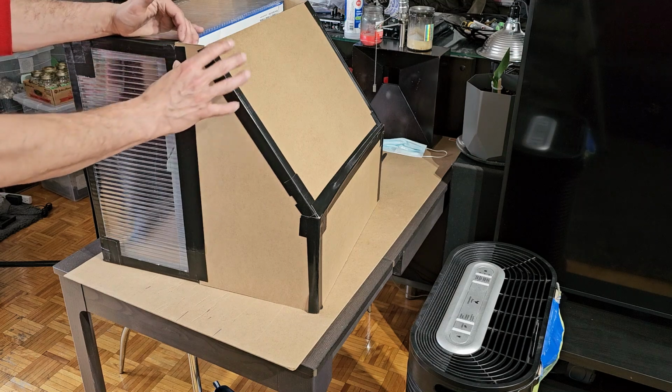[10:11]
I did make it a little bit smaller, but it is still a little bit large, depending on what you're doing. I mean, it's not for me. I'm fine with this, and I live in a small apartment. I just put it up on a top shelf when I'm not using it. I'm trying to think of a way for this piece and this piece to be separate for storage purposes, but also easily attached together.
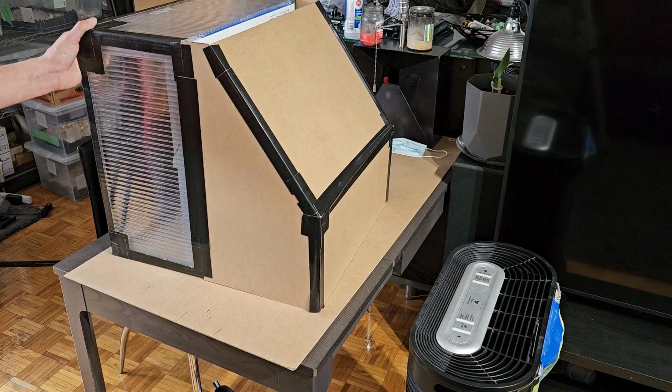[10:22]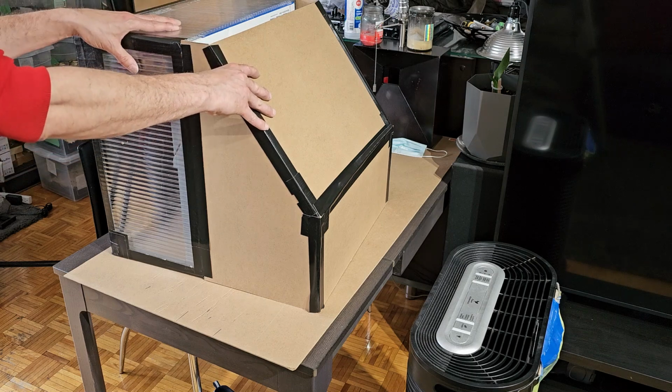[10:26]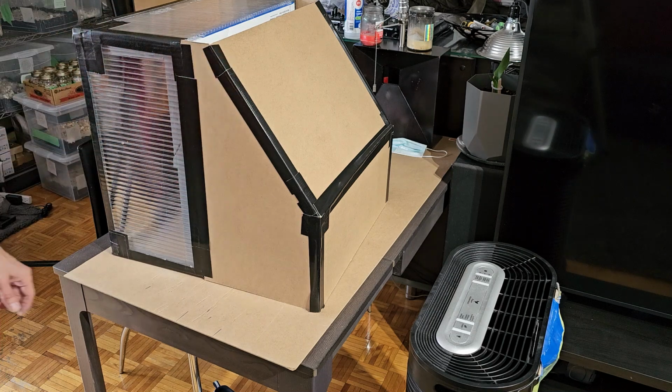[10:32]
Yeah, okay. I thought of a way to do this. Actually, this is gonna work very well. When we're done here, this is gonna be a two-piece thing, and you're just gonna literally put one inside the other when you wanna use it and take them apart to store each one stacked on top of each other to take up less space when you're not using it. So make sure you stick to the end so you can see how I end up doing that.
I've got the thought. For now, we're going to close in the other two halves of this. Our width is going to be based on that, so it's the same as everything else. So 2.5 inches by 20.5.
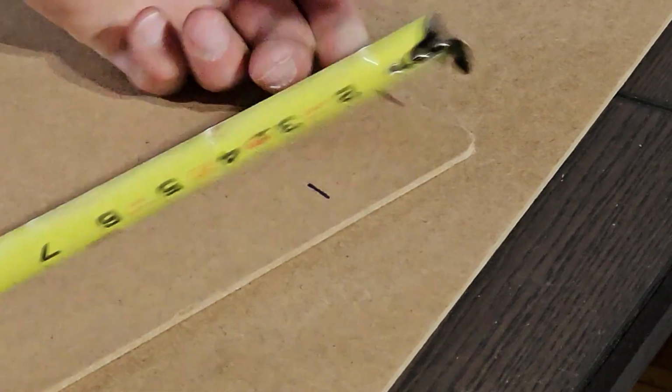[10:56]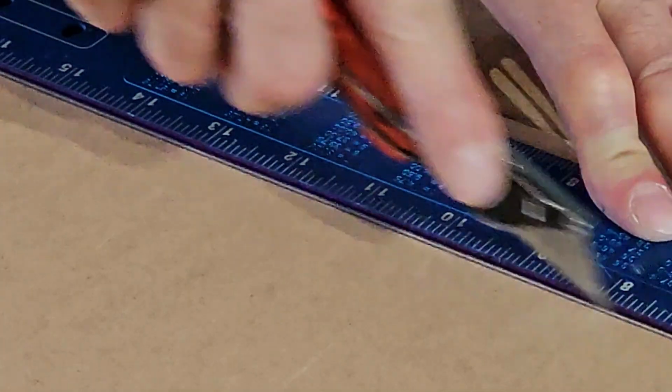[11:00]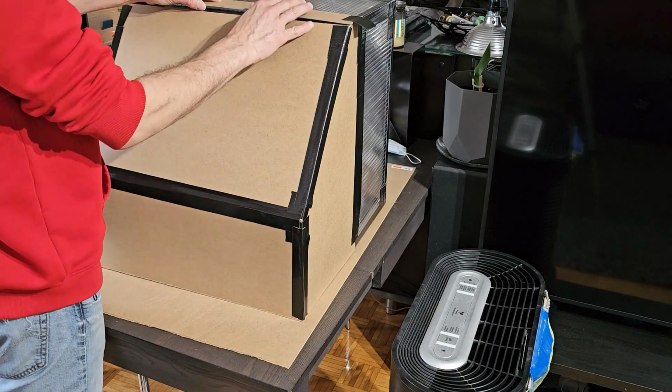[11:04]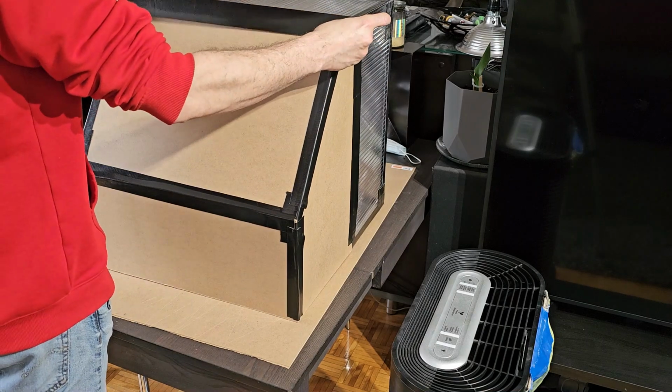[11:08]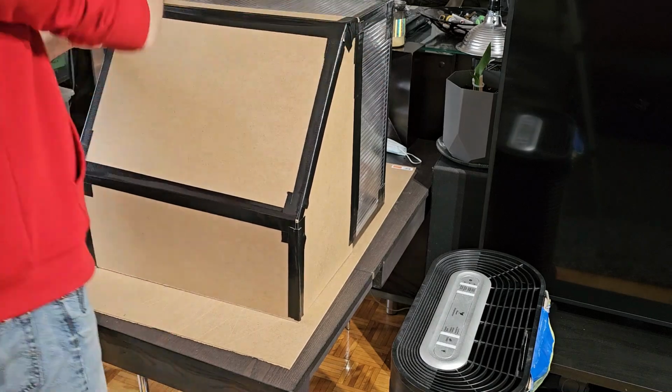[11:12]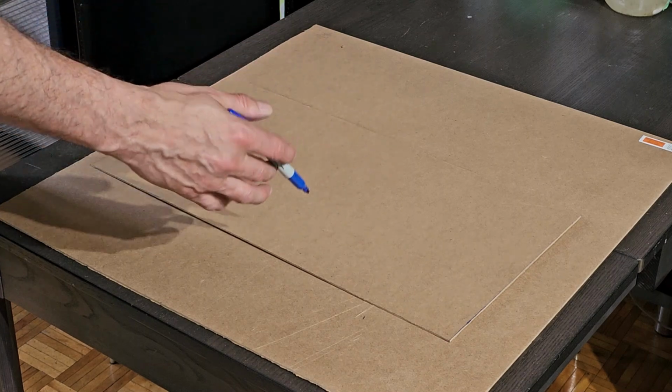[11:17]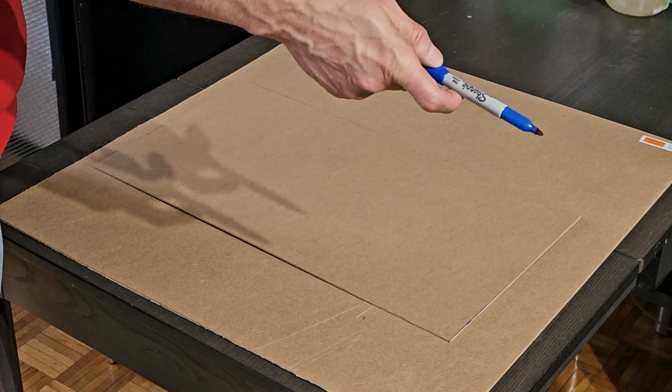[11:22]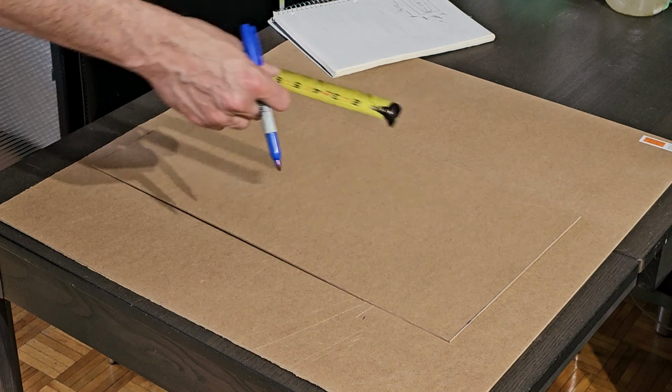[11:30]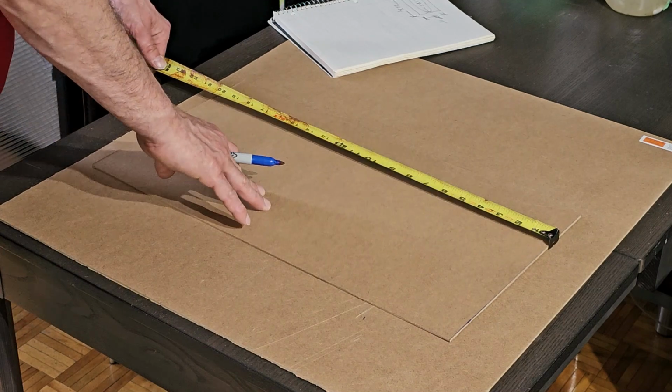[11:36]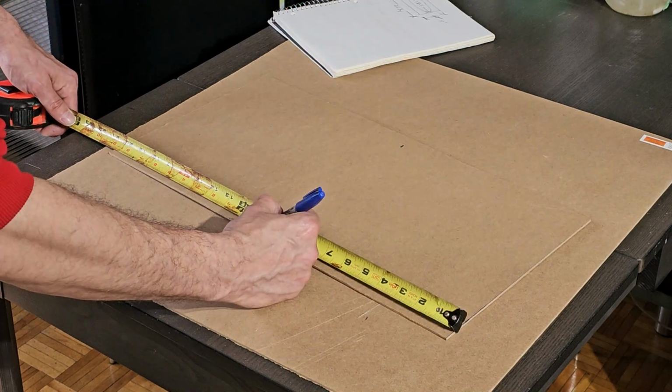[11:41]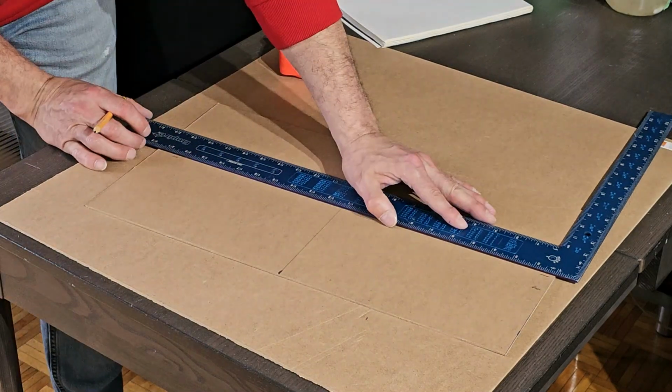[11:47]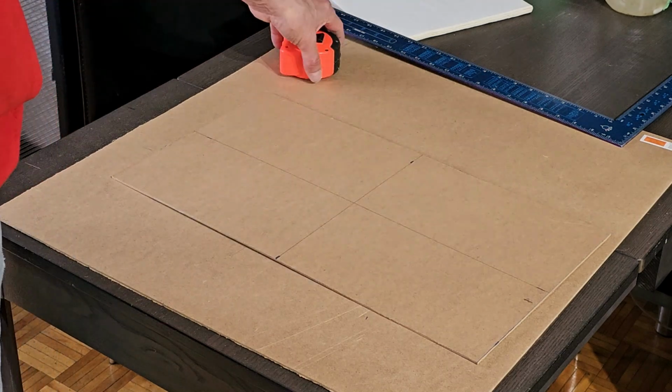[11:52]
Alright, so here's how I'm going to figure out where to cut the oval. I can't use the cardboard one as a template because it wasn't cut perfectly to the size of the top of this. Based on the measurements I took earlier, and I've double checked those, it's 18.5 across for the size of the cutout, and we have 20.5. So what I want to do first is find the center of this piece of wood. Alright, now we have the exact middle of this piece of wood, which is our bottom.
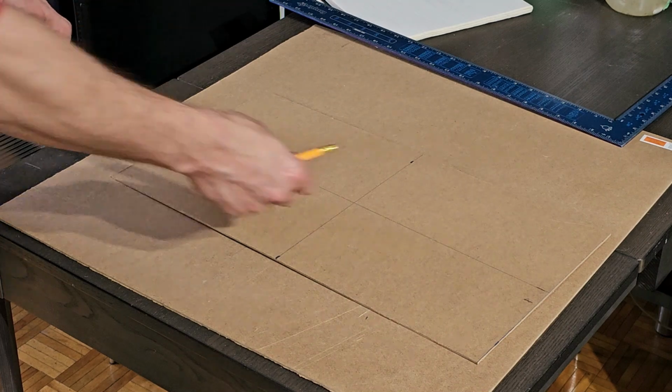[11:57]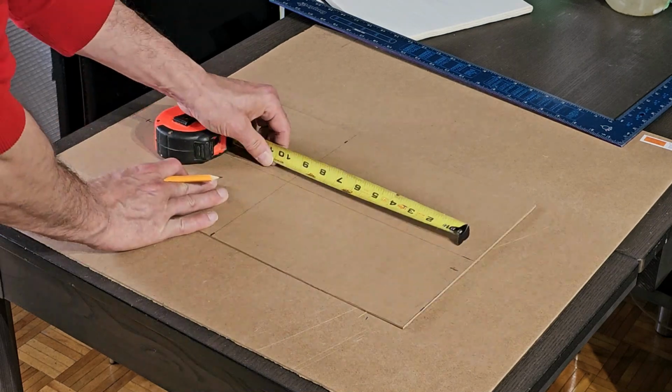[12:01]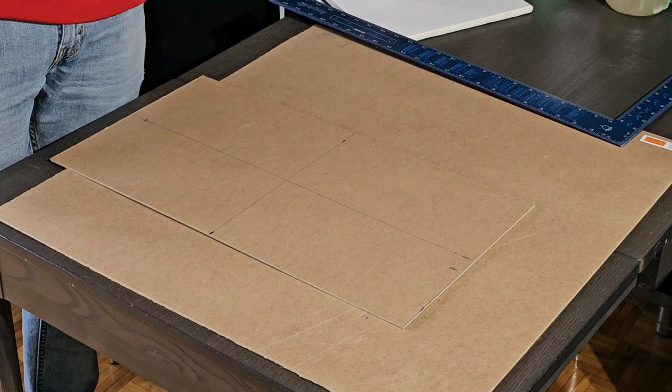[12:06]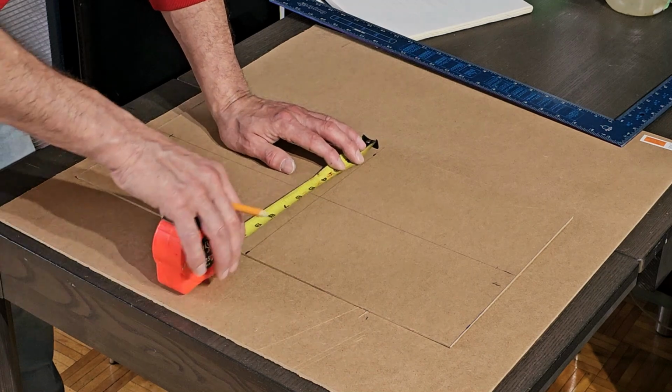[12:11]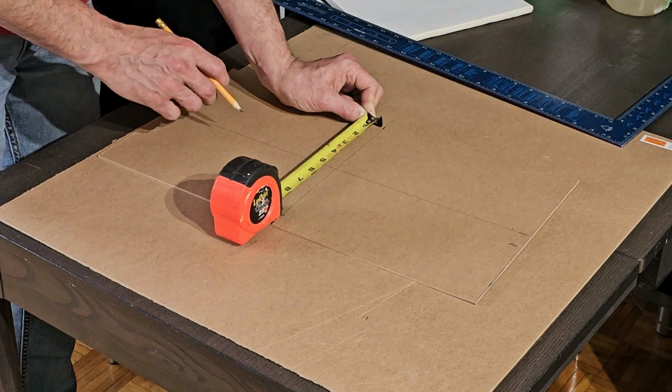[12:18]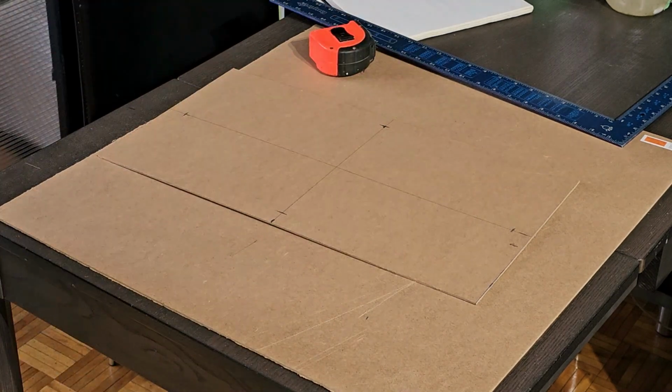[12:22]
Now if it's 18.5, then it means we need 9.25 in each direction from center. Now our width is 9.25. So we're gonna measure 4 5/8 on either side of center. Alright, now we know the outer points on all edges of our oval.
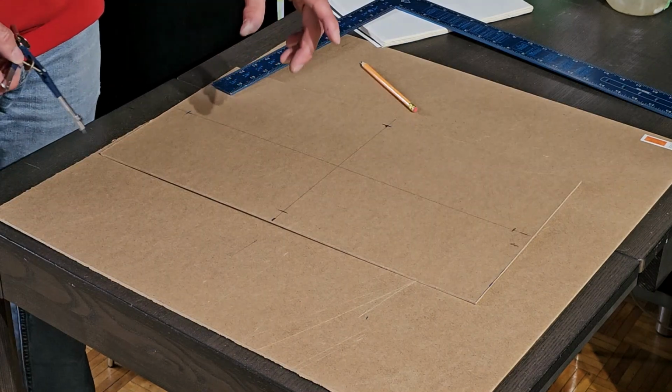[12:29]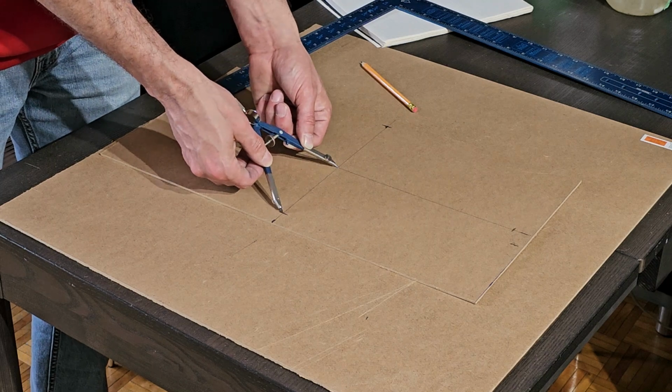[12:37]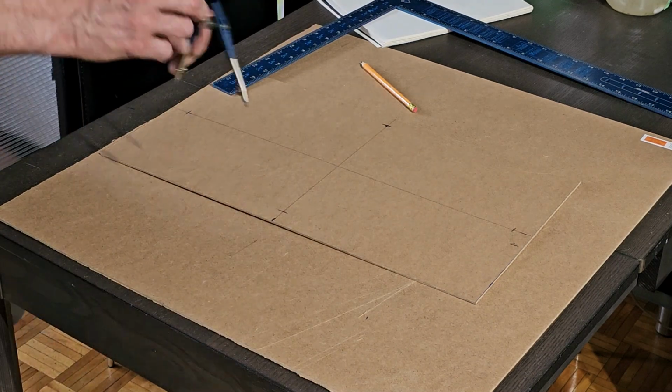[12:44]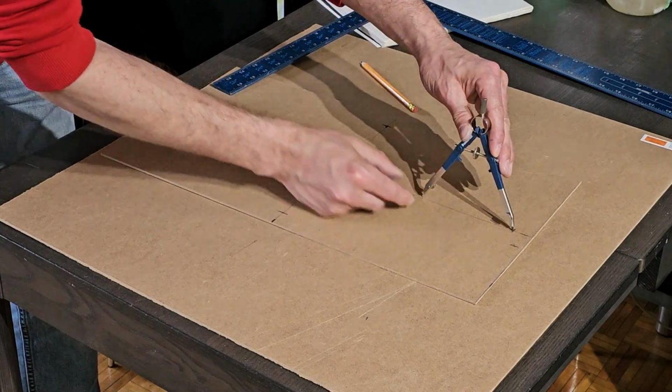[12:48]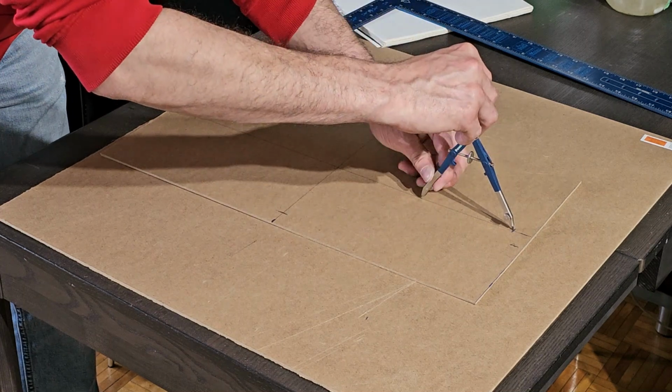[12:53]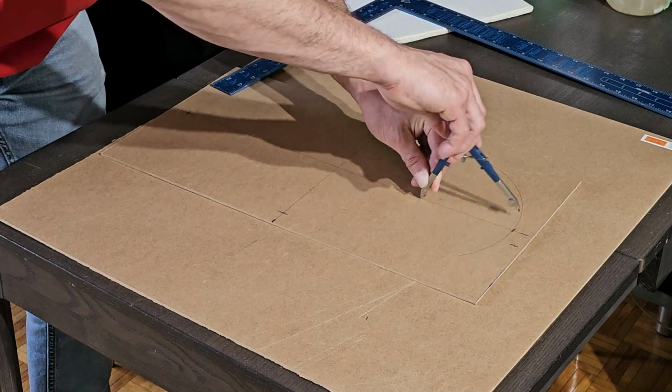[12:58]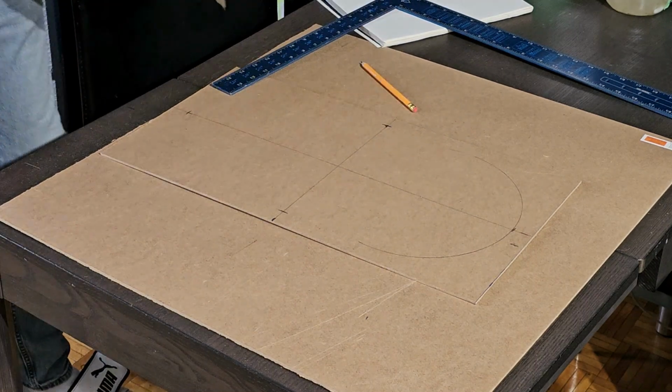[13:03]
Alright guys, so how we figure out the curve of the circle is pretty simple. We're just going to take our compass and put it on the center point, and line it up with our outer edge, which is 4 5/8. And now that we have that, we're going to line our compass up on our line and our pencil mark, and we're going to draw our curve. I'm going to do the same thing over here.
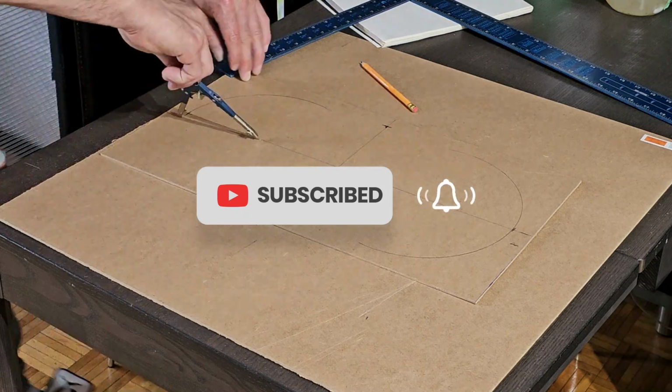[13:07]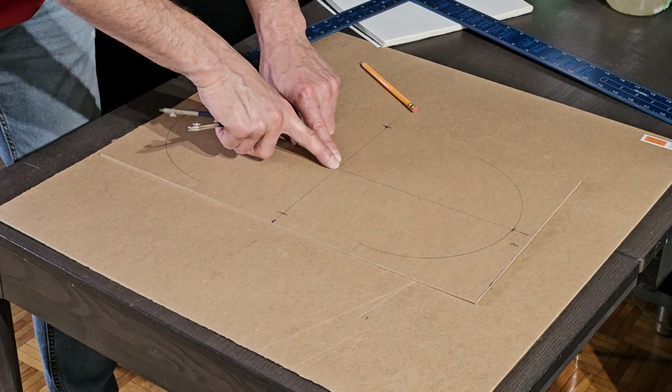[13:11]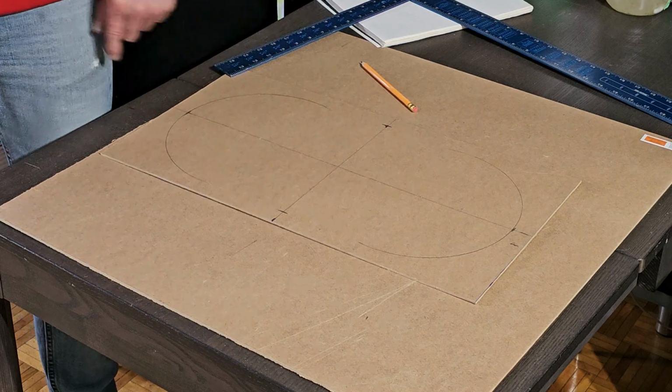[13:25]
If you don't have a compass, you can use a piece of string, or you can just cut a piece of cardboard and pin it down, then put a hole in the end of it and put a pencil in the hole of the cardboard, and you can spin it around, or use a piece of string. There's many different ways to do that.
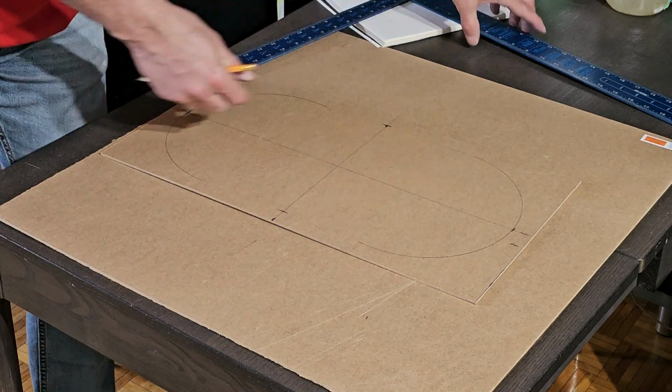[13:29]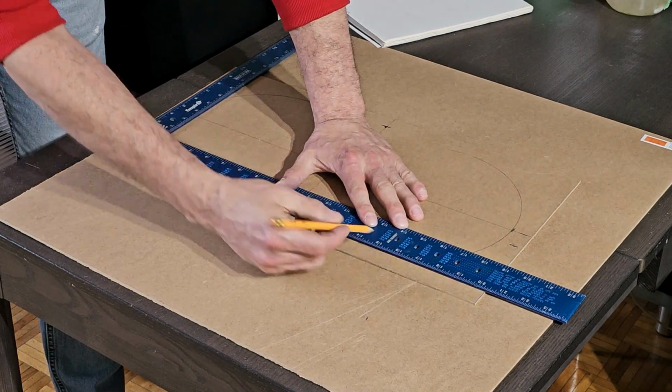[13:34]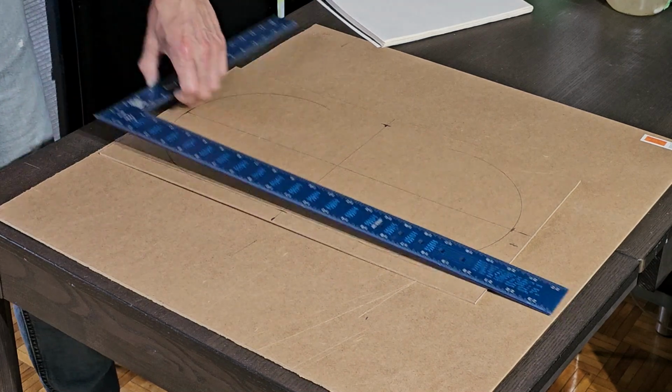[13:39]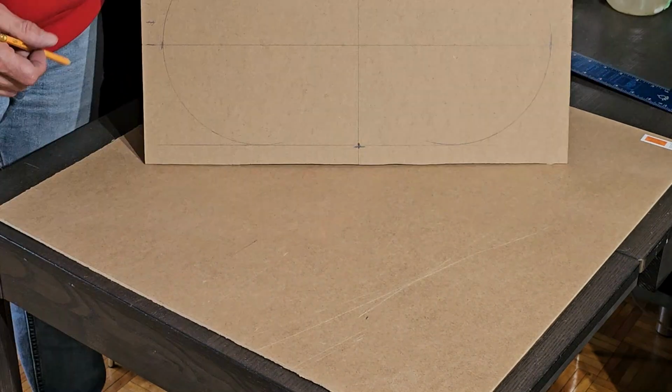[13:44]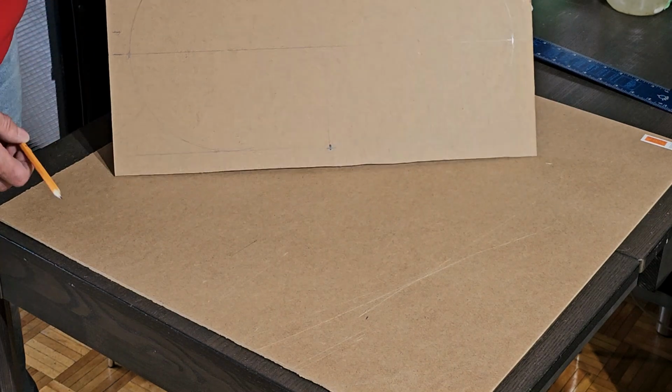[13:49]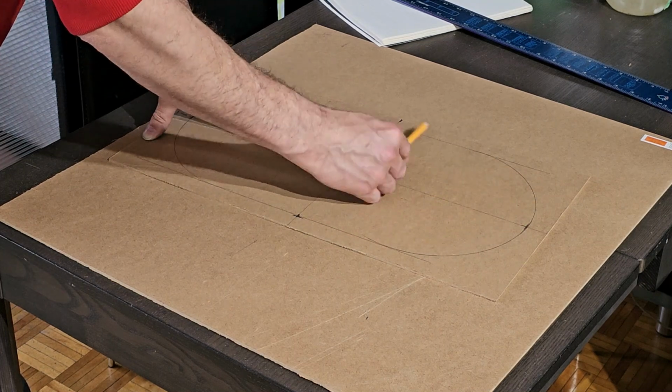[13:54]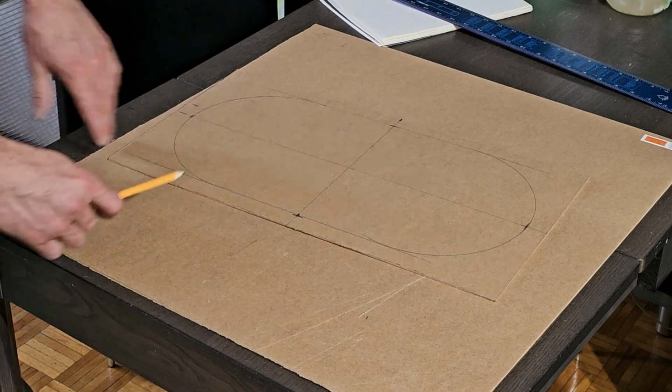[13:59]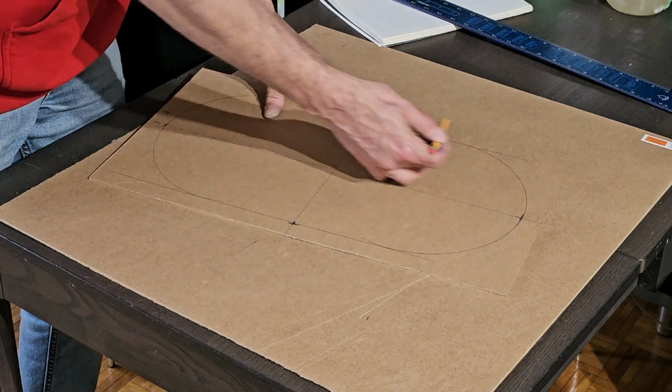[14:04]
Now that we've got our curves, the rest is pretty simple. We're just going to go for the outermost point of our curve on both of them. We're gonna do the same thing on the other side. And there you have the exact cutout for that. Now you can carefully carve this around with a knife and then use a straight edge with the knife to cut the straight parts. I happen to have a jigsaw and some other tools, so I'm going to use that to cut it out.
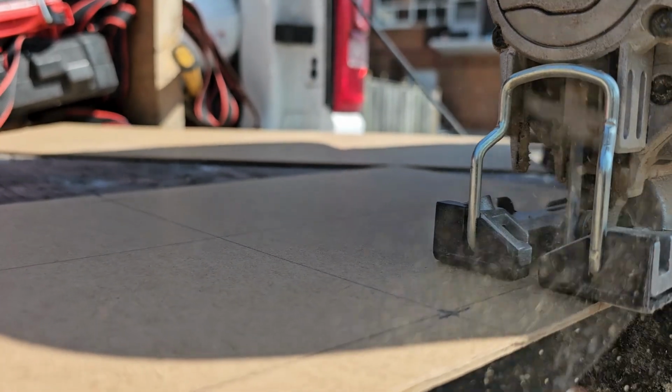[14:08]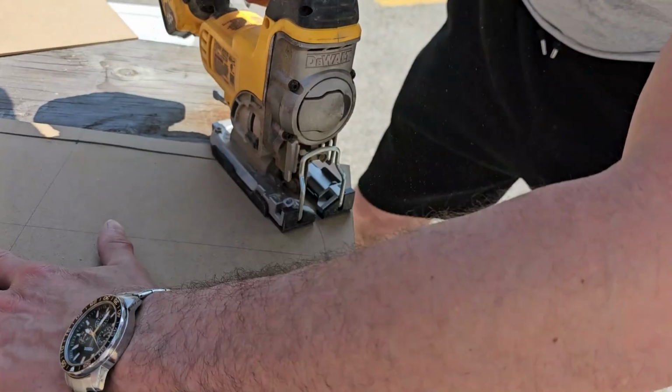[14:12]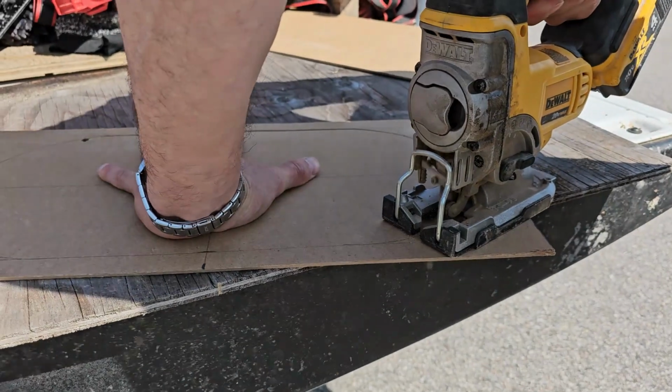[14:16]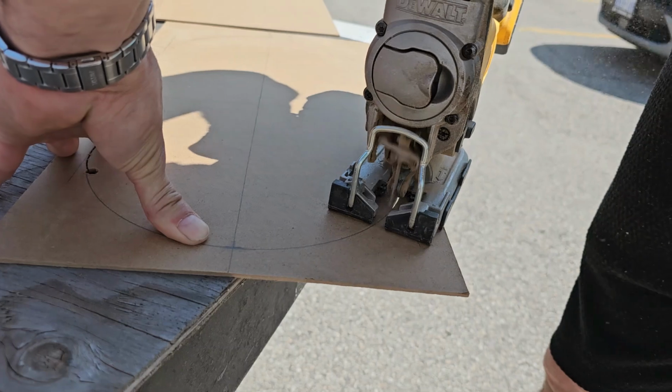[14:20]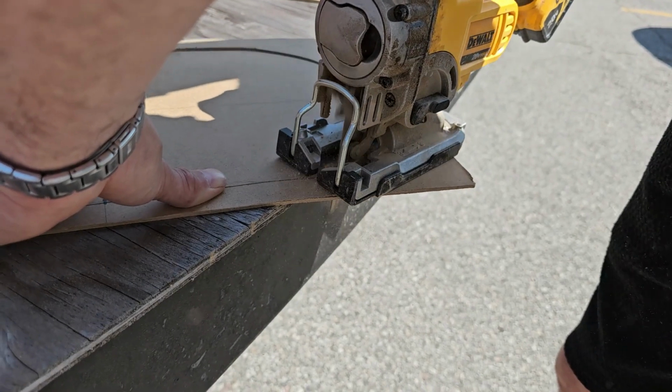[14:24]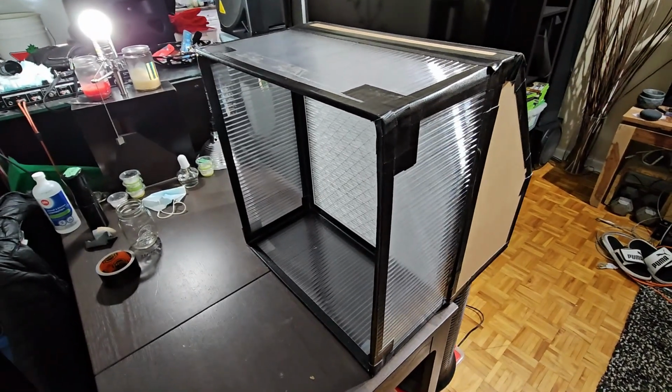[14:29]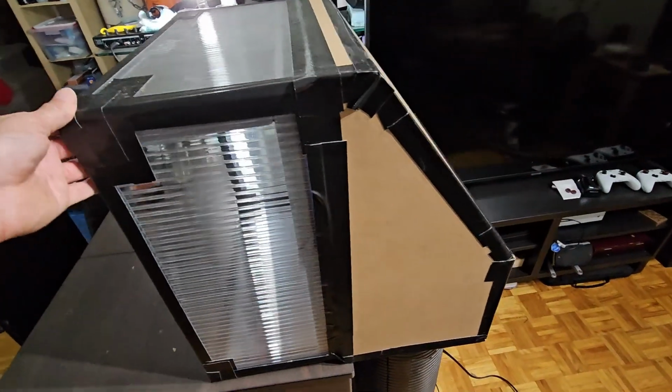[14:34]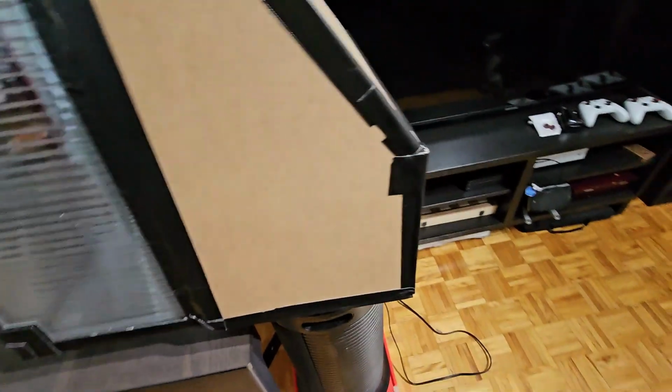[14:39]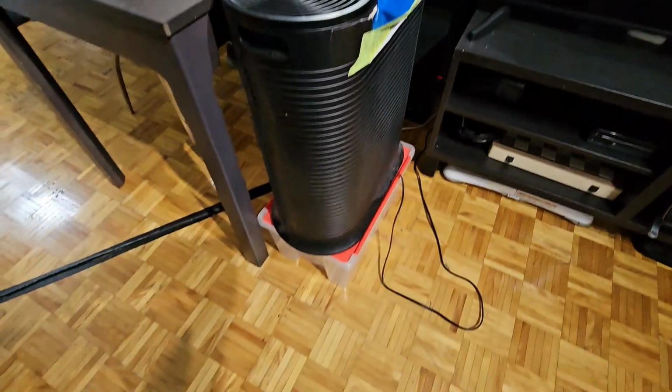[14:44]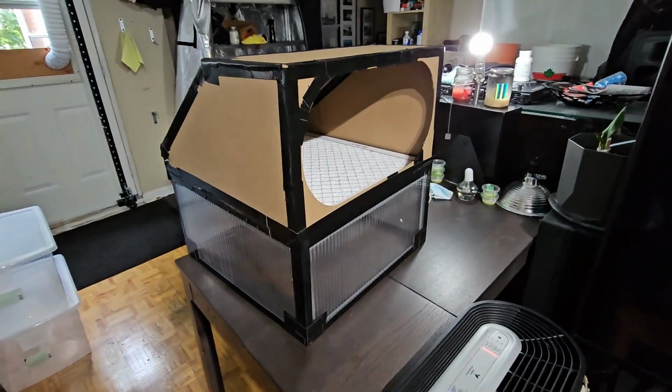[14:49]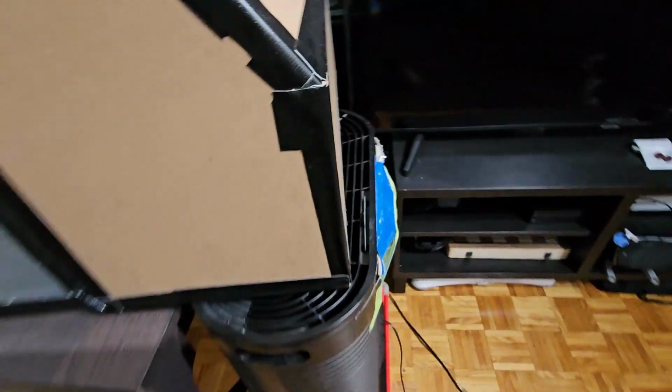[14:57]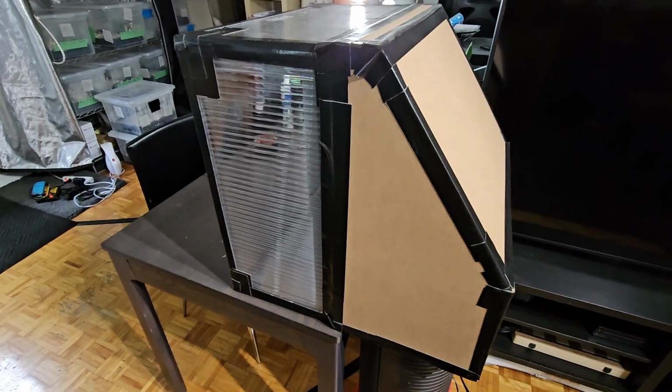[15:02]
Alright, so the laminar flow hood is complete. Got the plexiglass corrugation in the front. Used a 1/8 inch MDF to build the box in the back. I've got my room purifier propped up on a container, so it's just a little bit higher than the table. That way the cutout that I've got on the bottom here fits right over top of it nicely anytime I want to use it. And the rest of the time it's just cleaning the air in my apartment. And this just goes up on a shelf when I'm not using it.